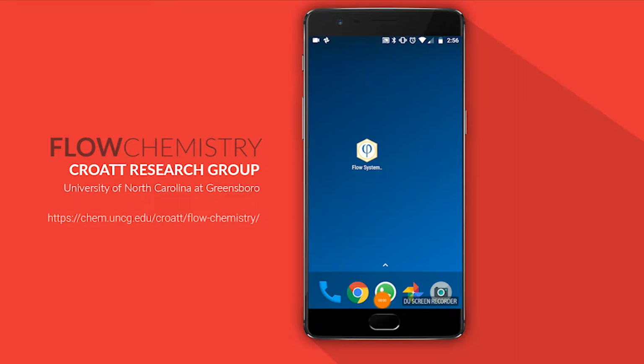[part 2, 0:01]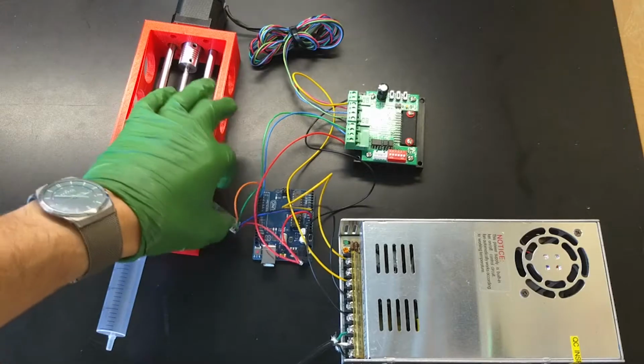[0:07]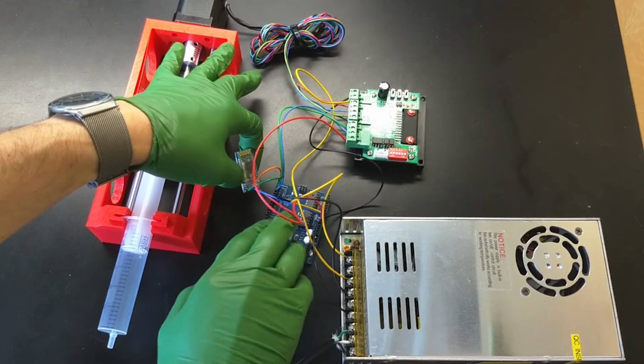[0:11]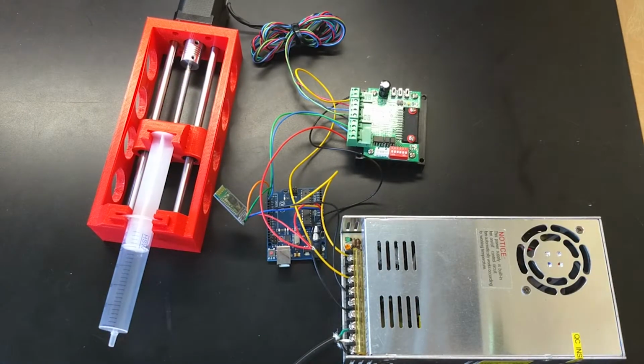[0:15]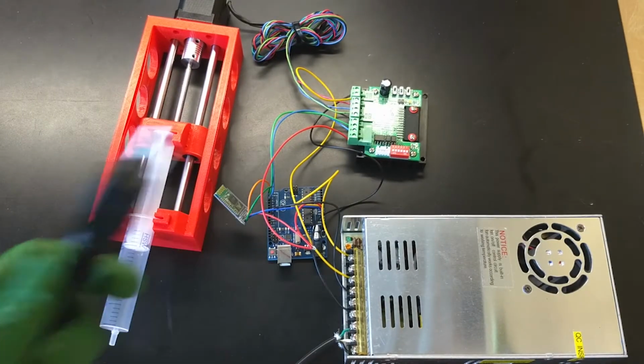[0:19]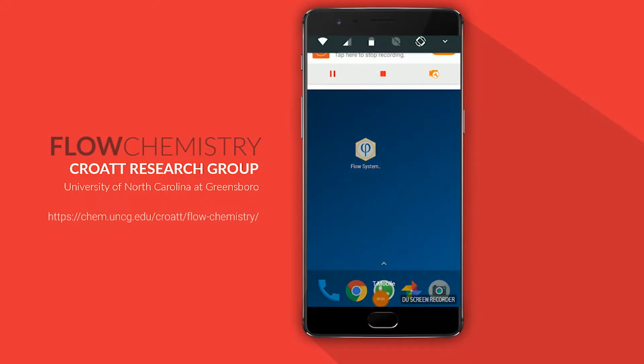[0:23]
In this video, I'll show you how to use our companion Android app to control the syringe pumps. If you're following this tutorial in sequence with the previous videos, reconnect the Bluetooth dongle's RX and TX pins to the microcontroller. Then disconnect the microcontroller from the computer's USB port, and power on the electronics by plugging in the power supply. Once that is done, make sure Bluetooth is enabled on your Android device.
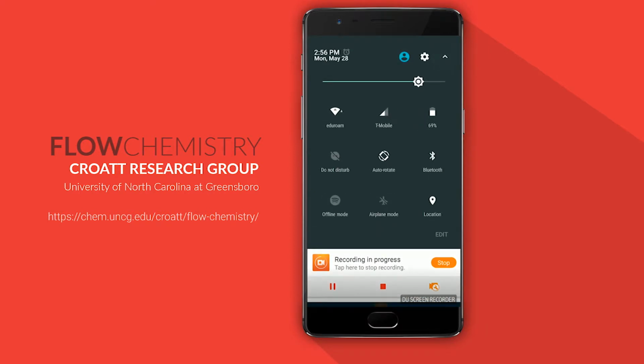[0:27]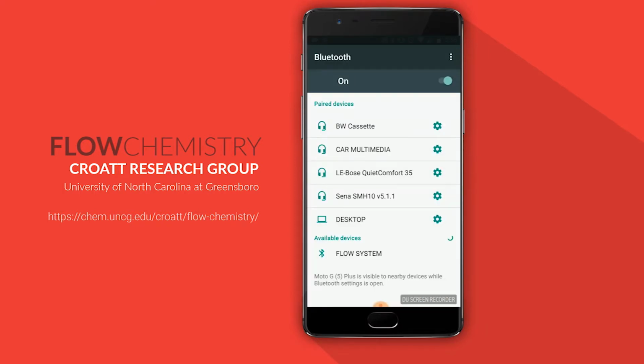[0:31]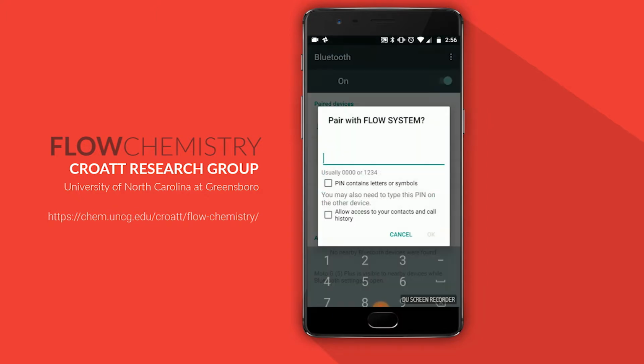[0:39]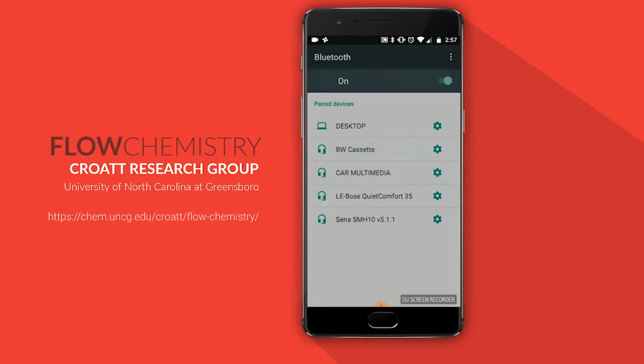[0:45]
Open the Bluetooth settings and search for the Bluetooth dongle. I've previously renamed mine to Flow System for clarity. When prompted for a password, use 0000 or 1234. If those don't work, check with the manufacturer of the Bluetooth device for the default password. Once you have successfully paired, you don't need to do this again.
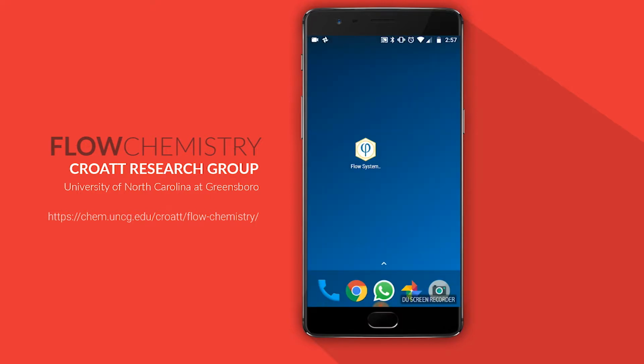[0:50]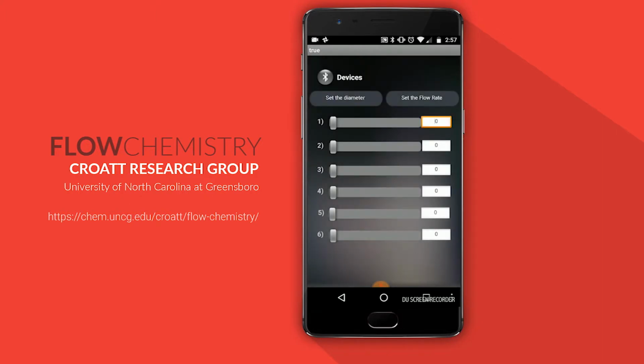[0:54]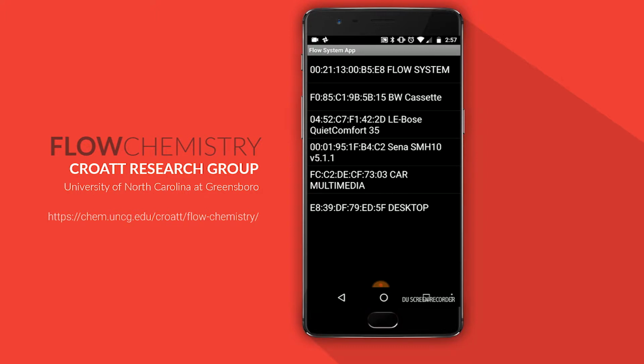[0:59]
Now navigate to the Companion app and open that. Select the gray Bluetooth icon and pick the Bluetooth dongle from the device list.
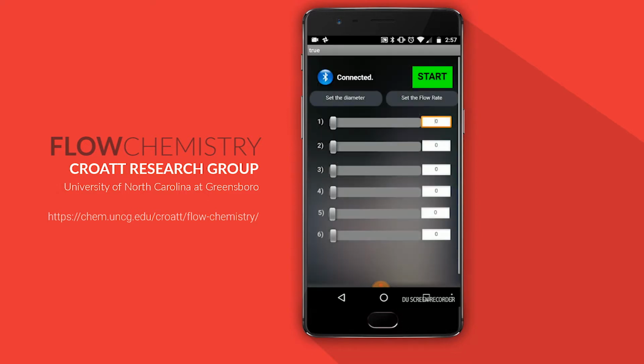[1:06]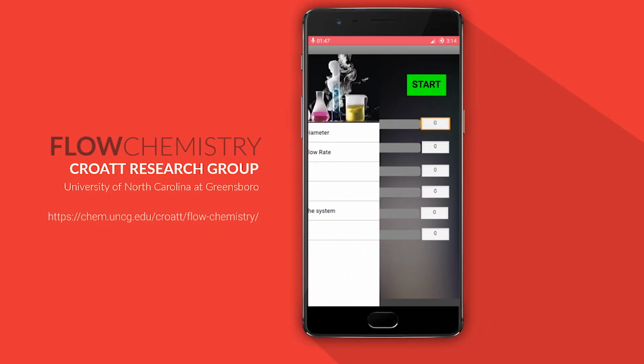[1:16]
Before you can begin using the pump, a volume needs to be informed. The default volume is 0 on startup. This is a safety feature. After informing a volume, navigate to the menu and open the flow rates page.
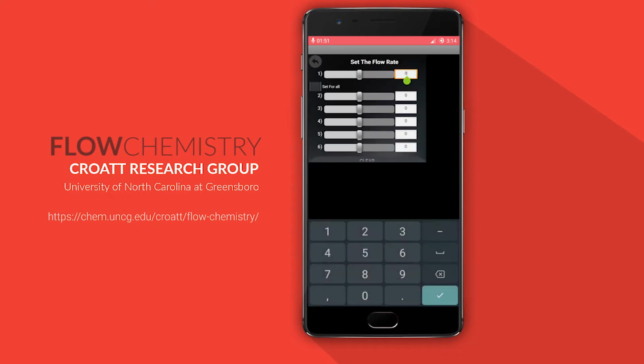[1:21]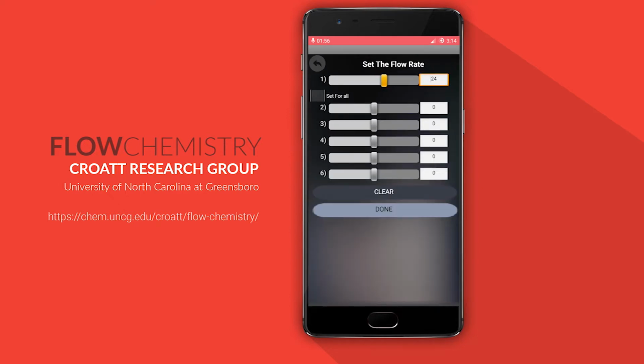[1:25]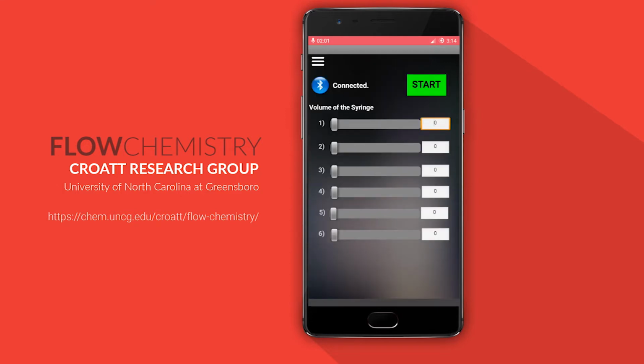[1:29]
Here you can select the flow rate for each pump. Press Done to return to the main page. And now that everything is set, all that is left to do is press the Start button. Once the pumps are in motion, you can interrupt them by pressing Stop.